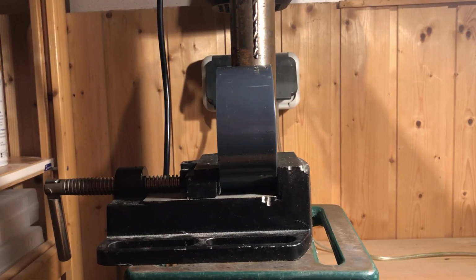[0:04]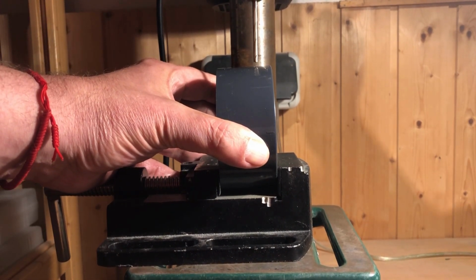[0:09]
Two holes still need to be drilled into the chamber. The 2mm hole is for the cathode and the 9mm hole is for the line laser that we will use as the illumination source.
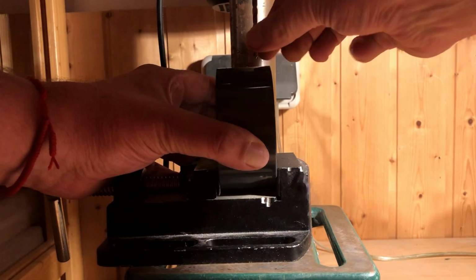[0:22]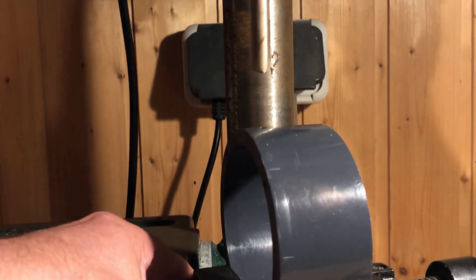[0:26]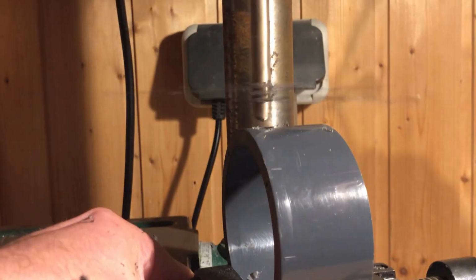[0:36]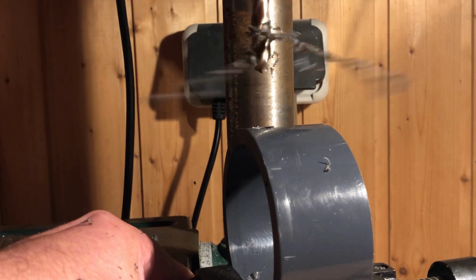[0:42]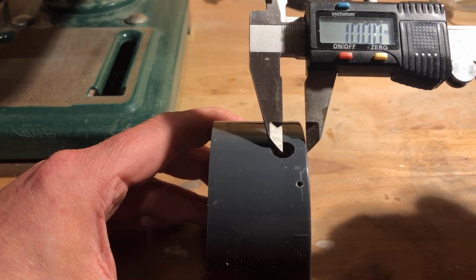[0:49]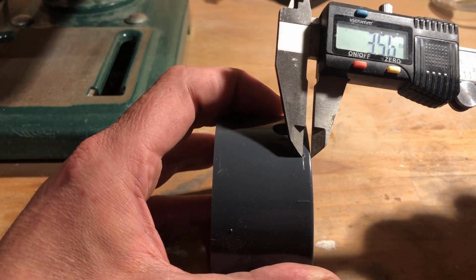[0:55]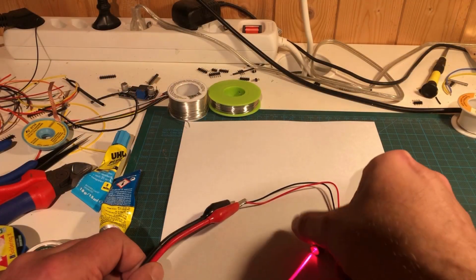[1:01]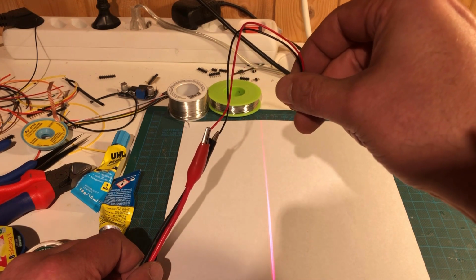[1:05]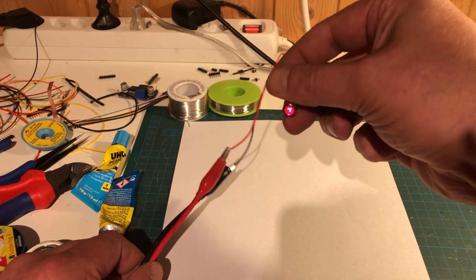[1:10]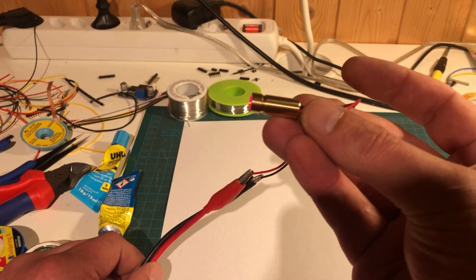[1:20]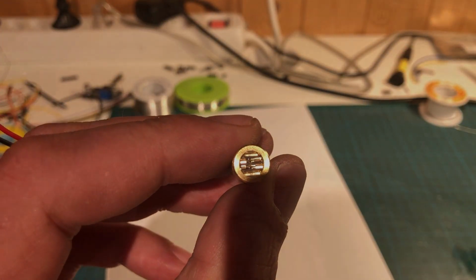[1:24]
I have already had a very good experience with the line laser as an illumination source. You can buy these 5mW lasers cheaply on eBay. They are usually operated with a voltage of 3 volts. There is a Fresnel lens at the exit aperture of the laser to create a line. The laser line is aligned at a 90 degree angle to the ribs of the Fresnel lens.
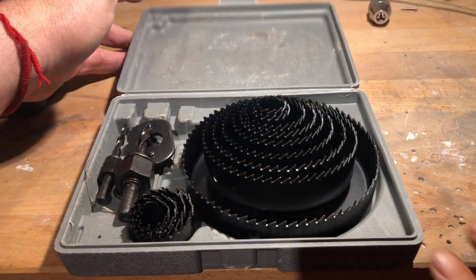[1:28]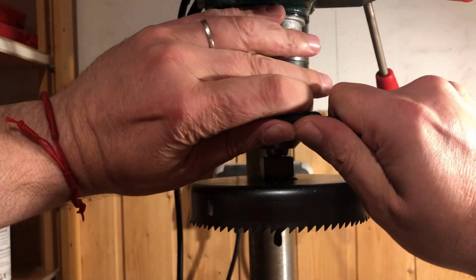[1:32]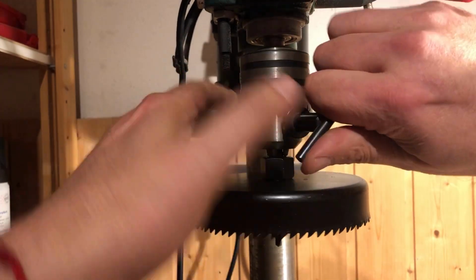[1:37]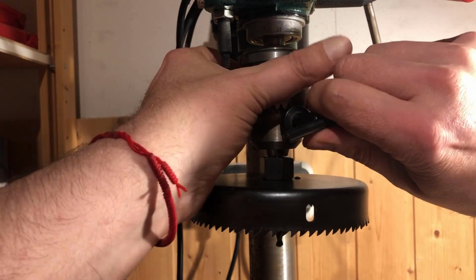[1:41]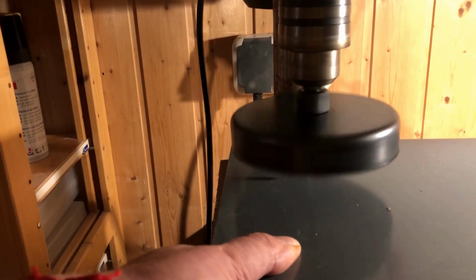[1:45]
To make the flange for the chamber, we need a hole saw set for wood and plastic. The hole saws are very useful for many projects. I use the largest hole saw of the set with a diameter of 127 millimeters. The two discs are cut out of a 6 millimeter thick PVC sheet.
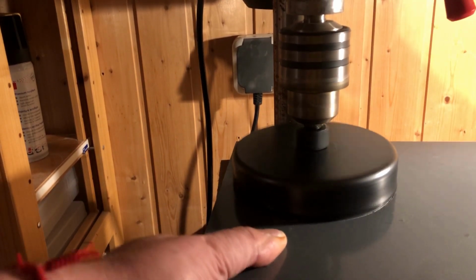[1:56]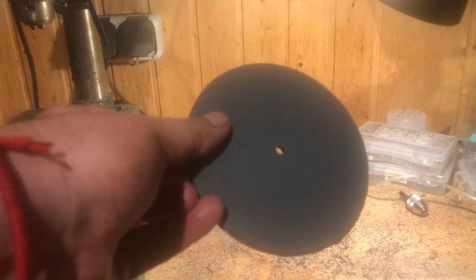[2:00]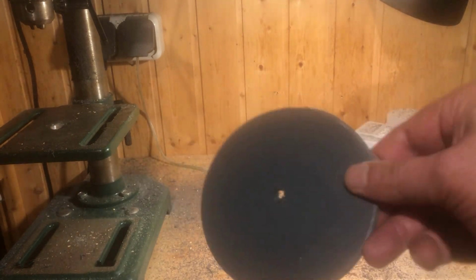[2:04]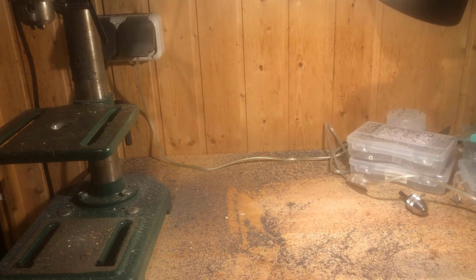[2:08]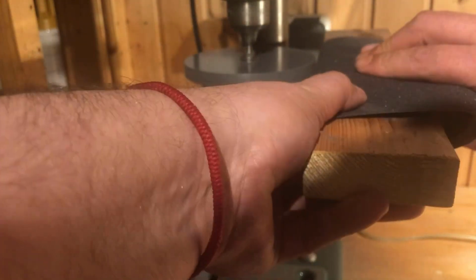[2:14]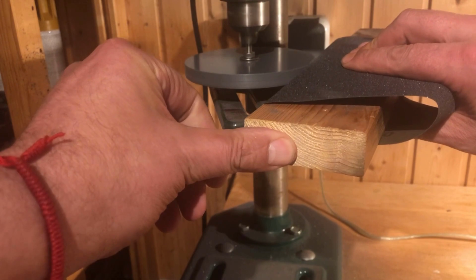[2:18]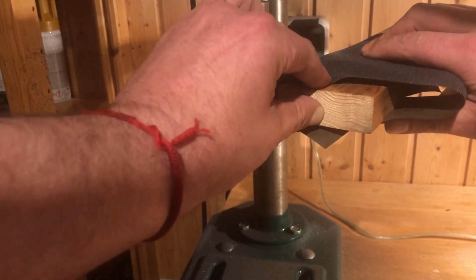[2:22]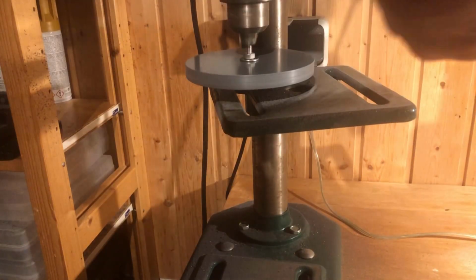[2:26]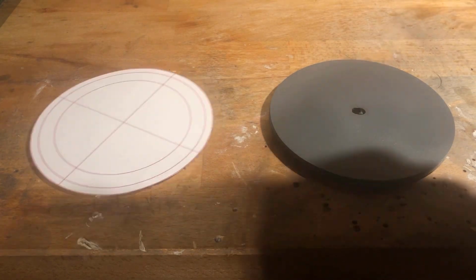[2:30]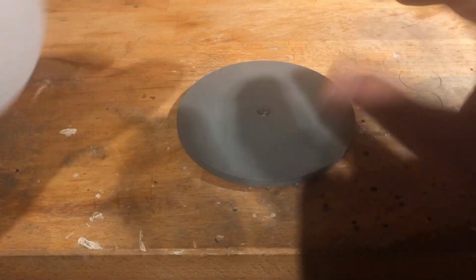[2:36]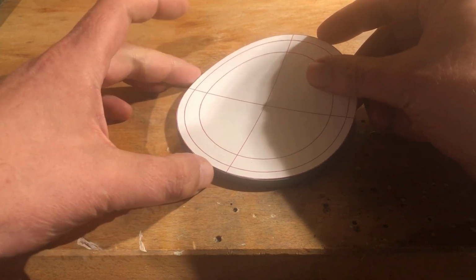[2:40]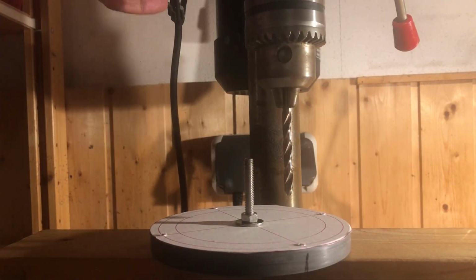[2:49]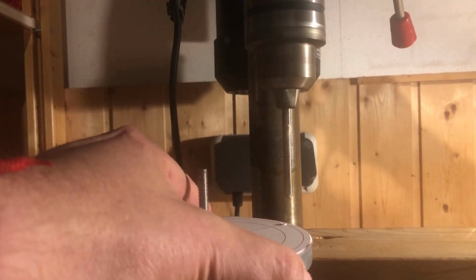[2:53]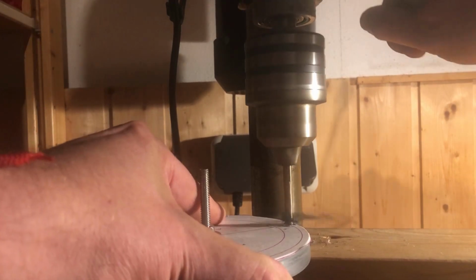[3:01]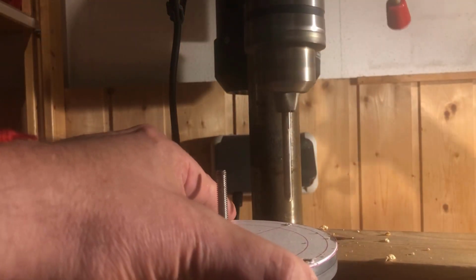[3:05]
I then screwed the two discs together, clamped them onto the drill press, and sanded them. For the holes in the cutout, I again used a paper template. Before I drilled the 4 6mm holes, I screwed the two discs back together. That ensures that the holes in the two discs match exactly.
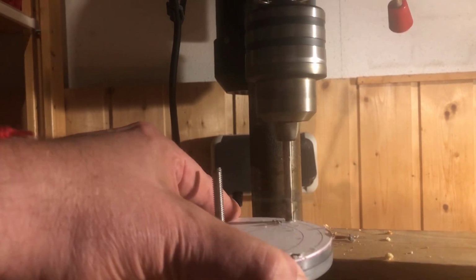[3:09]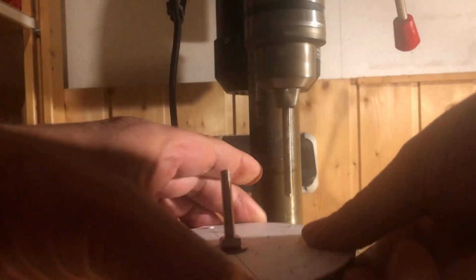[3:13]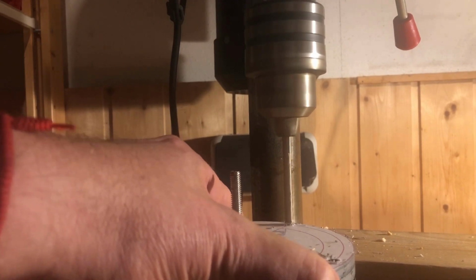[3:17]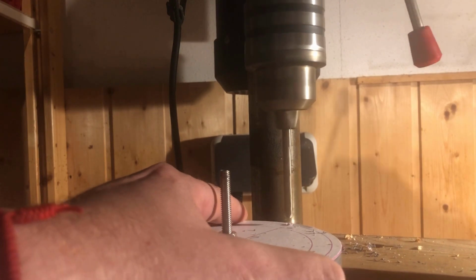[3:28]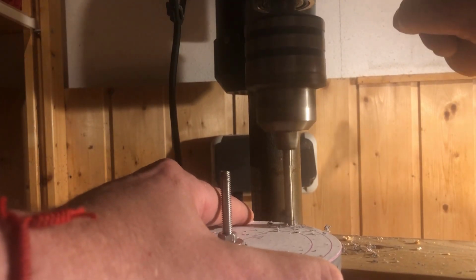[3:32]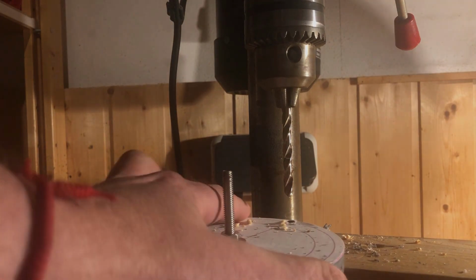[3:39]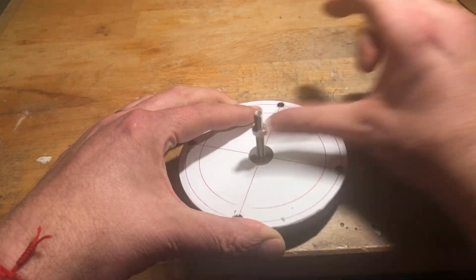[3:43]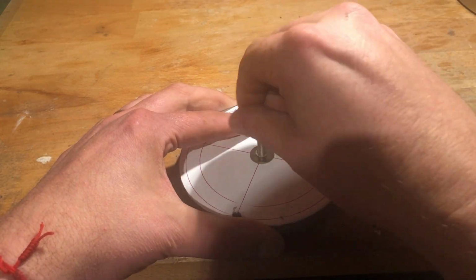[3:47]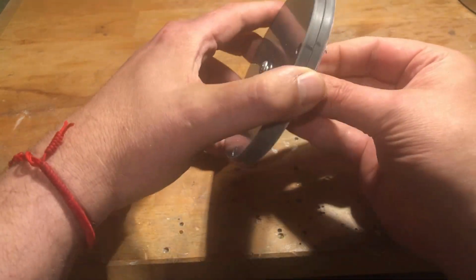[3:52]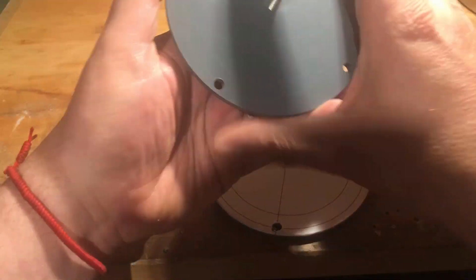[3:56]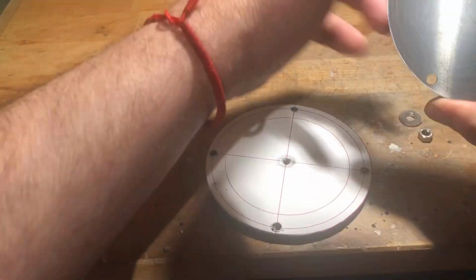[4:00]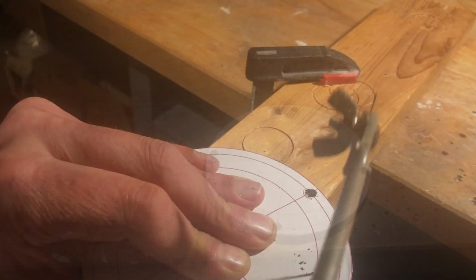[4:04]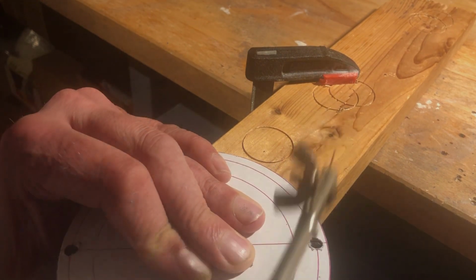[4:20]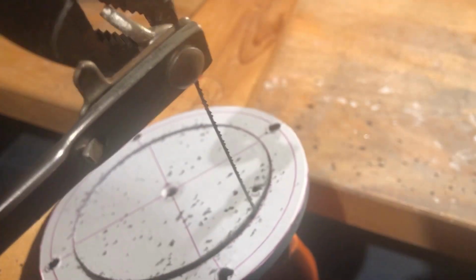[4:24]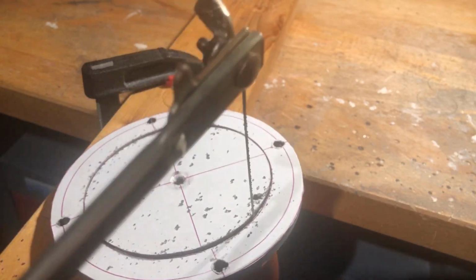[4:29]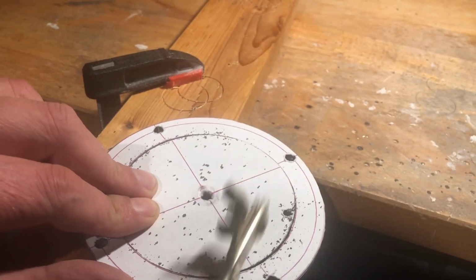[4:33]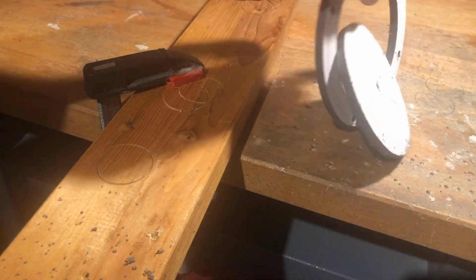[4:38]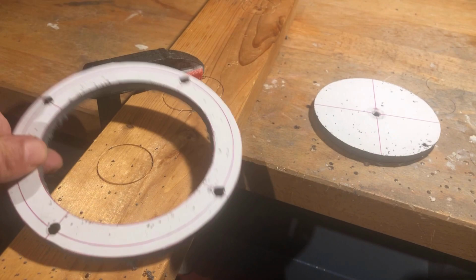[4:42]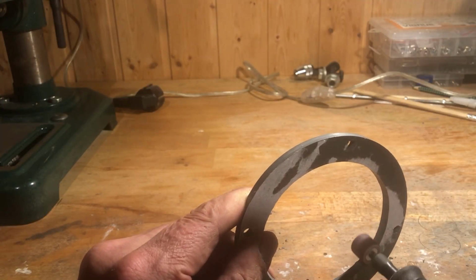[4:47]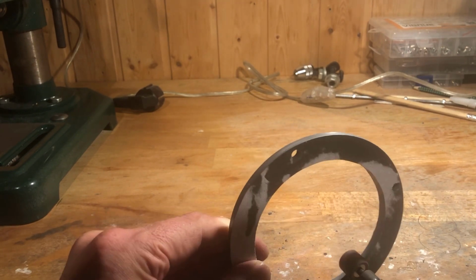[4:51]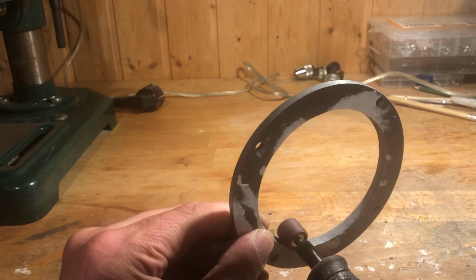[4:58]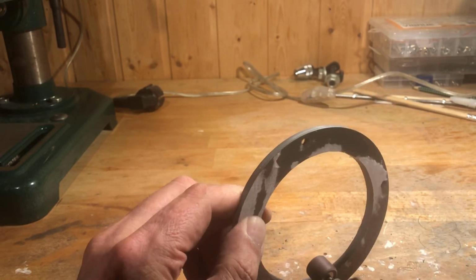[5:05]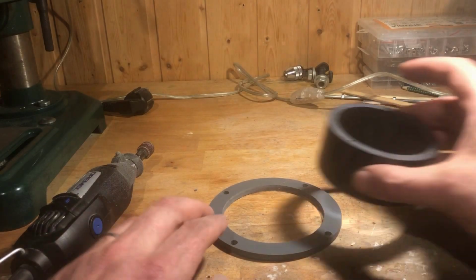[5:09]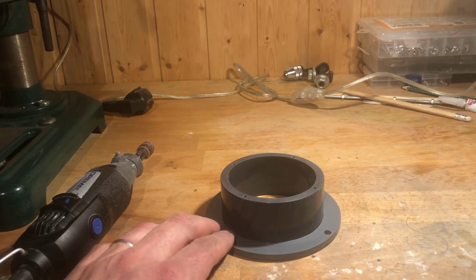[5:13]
For the cutout, which corresponds to the outer diameter of the chamber, a fret saw is used. I like to use PVC because it is very easy to machine. Using a Dremel, the cutting surface was then sanded. The chamber should snugly fit into the cutout.
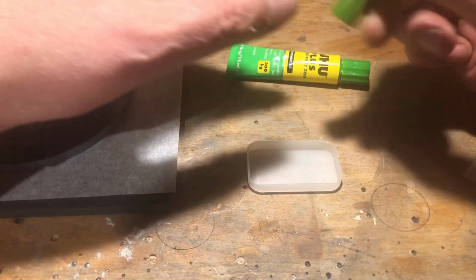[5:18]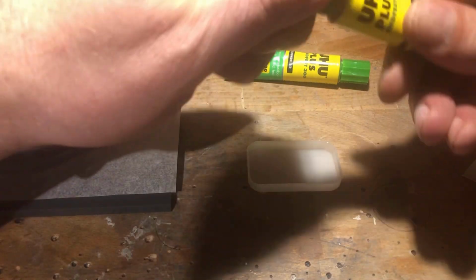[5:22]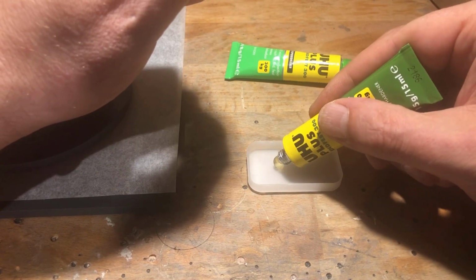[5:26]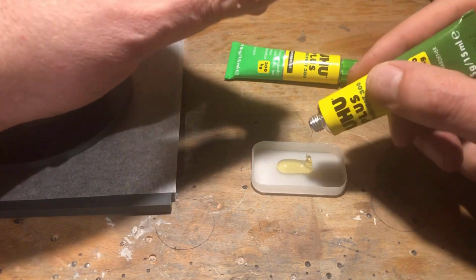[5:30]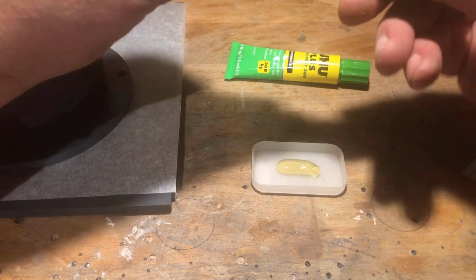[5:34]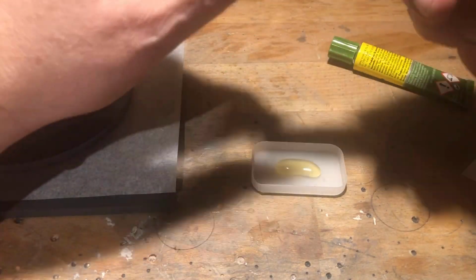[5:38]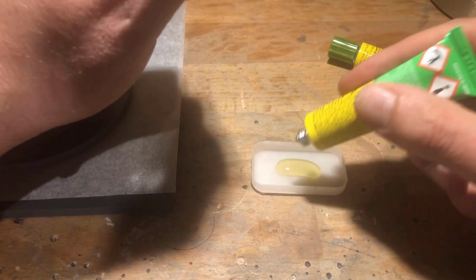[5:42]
To bond the chamber to the flange, I use slow curing two-component epoxy. This allows corrections to be made in a calm manner. Epoxy resin also fills small imperfections and gaps. The bonding surfaces must be free of dust and grease.
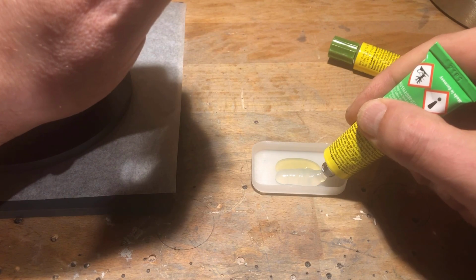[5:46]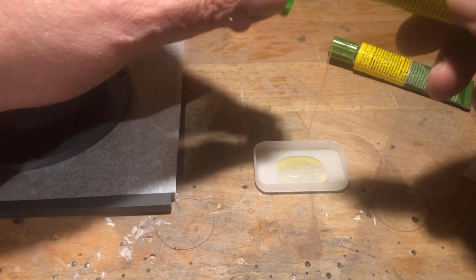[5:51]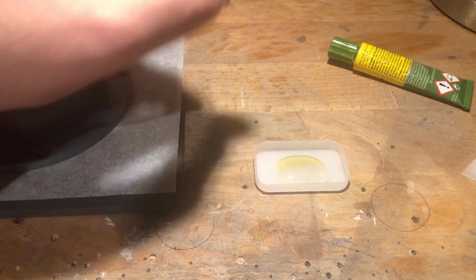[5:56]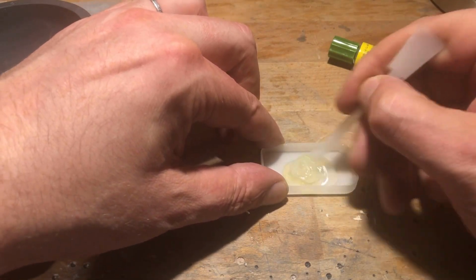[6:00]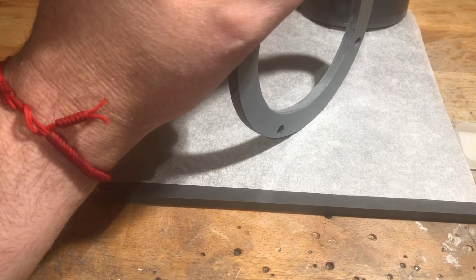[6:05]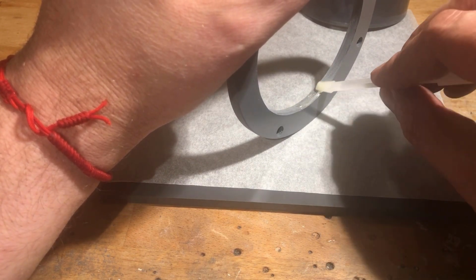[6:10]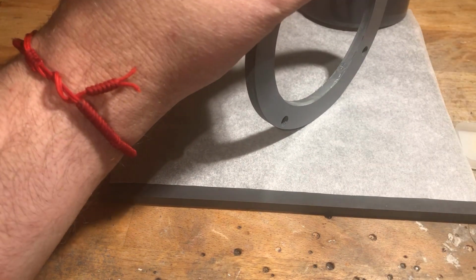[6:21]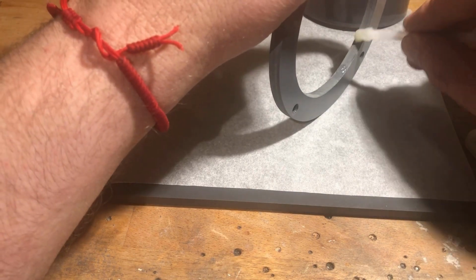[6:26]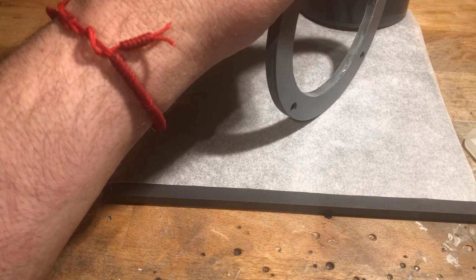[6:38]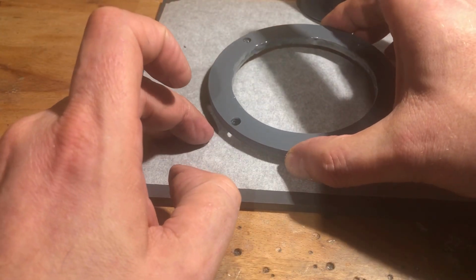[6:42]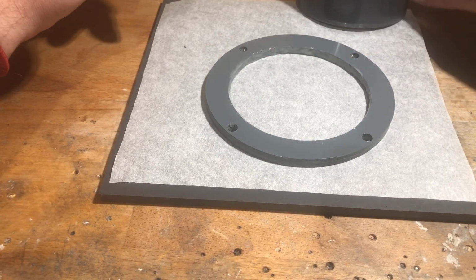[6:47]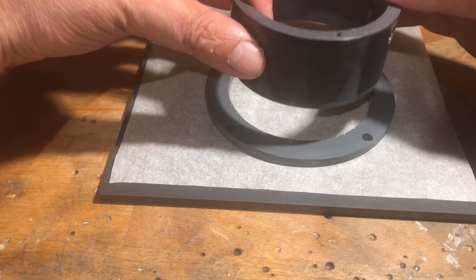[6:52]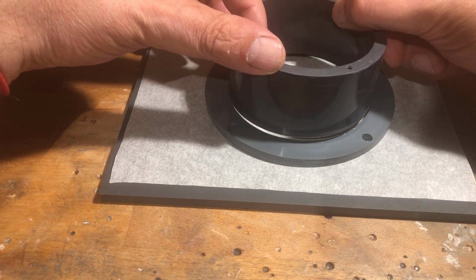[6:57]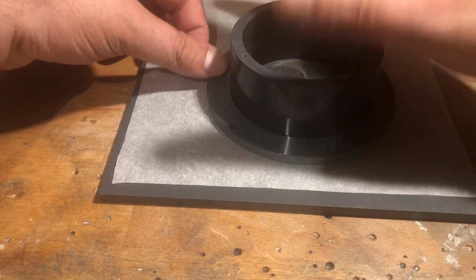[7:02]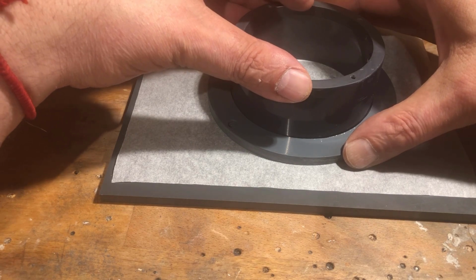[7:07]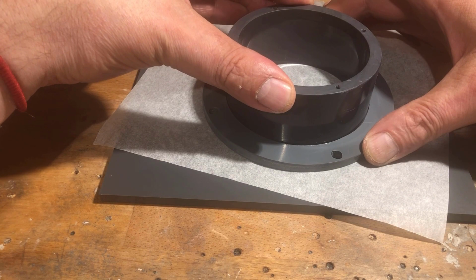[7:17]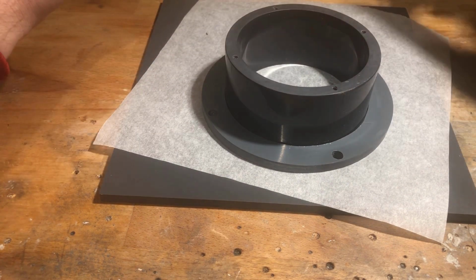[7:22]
I use non-stick baking paper as a support surface when gluing. The two-component epoxy I use takes 12 hours to cure completely. In the next step, I glued in the line laser.
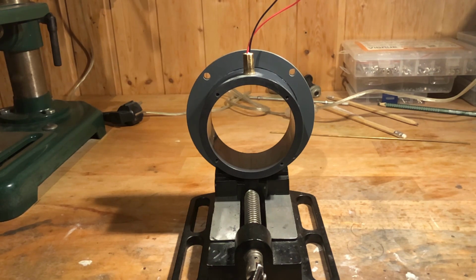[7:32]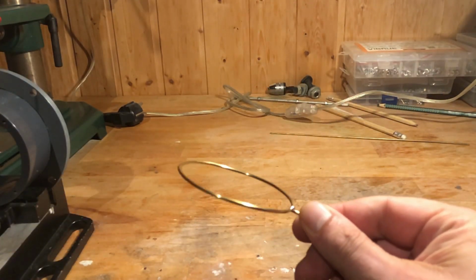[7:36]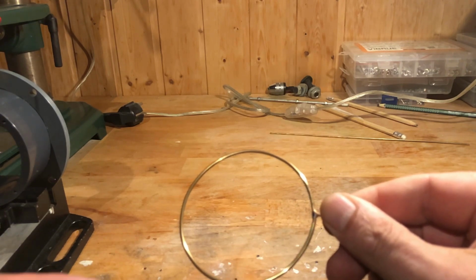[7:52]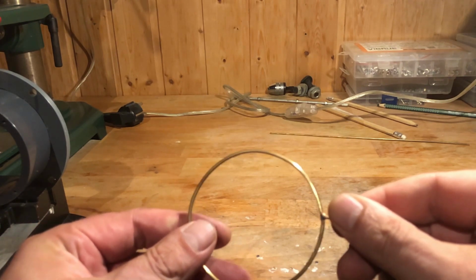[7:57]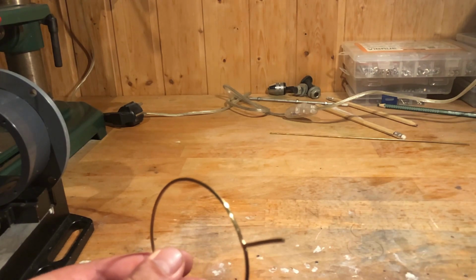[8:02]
Off camera, I made the ring electrode, respectively cathode, from a 2mm brass wire. I will explain later what we need it for. Again, as with all other parts, slow curing two-component epoxy resin was used to bond the ring electrode into the chamber.
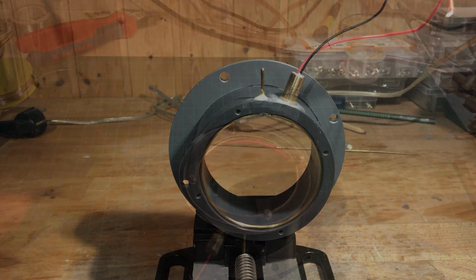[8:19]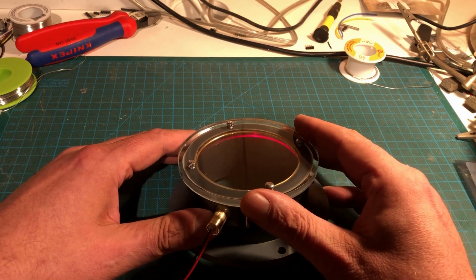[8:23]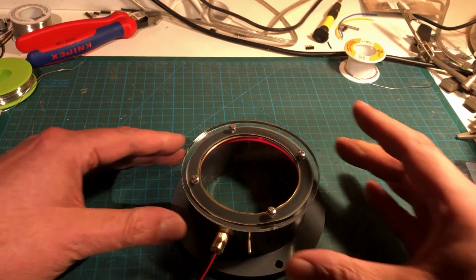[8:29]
Finally, the plexiglass disc was glued to the chamber and screwed in place using 4 M3, 16mm stainless steel screws.